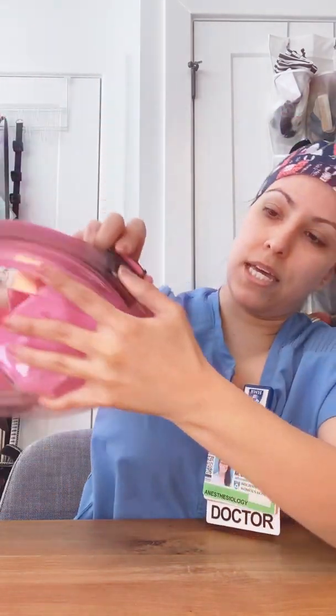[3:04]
And I wanted to show everybody a way that I've created personal protective equipment for myself in order to protect myself in the COVID units, and also if I'm called to provide anesthesia for any patients who are COVID positive.
So I've been looking a lot at the ideas circulating around, and I've adapted this in order to best suit my needs. Most of those needs are usually I am called to place central lines and arterial lines in patients who are COVID positive. And sometimes when they first arrive, I talk to them and I'm very close to them because they need physical exams and I need to gather some general medical history as well.
So I wanted to make sure I developed something that maintained my full free range of motion from side to side and up and down, especially because before I was wearing an N95 mask and a face shield on top. The problem with that is that the face shield sometimes can be very cumbersome. And especially when you're putting a central line, if you're looking down, sometimes it can bonk up off your chest and can potentially lead to issues because it starts to ride up on your forehead and is a potential vulnerability in your protection. So I wanted something that would be both an N95 mask and a face shield all in one.
Now I've seen a lot of other protective equipment that have been developed during this time of shortage, one of which was developed at the University of Florida, go Gators, by Dr. Bruce Spees and colleagues, which involves using the surgical coverings that we normally use to keep our sterile surgical equipment clean as a good filter that may surpass an N95. The problem with that is that, unfortunately, that means my protection comes down to my sewing skills, which would condemn me to death if that was the case. So I wanted to present something that you could construct at home for under $50.
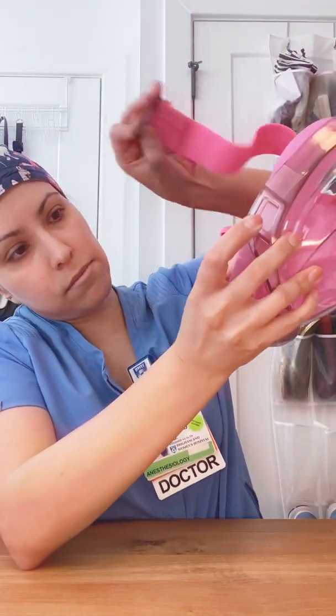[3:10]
It involves 1, 2, 3, 4, 5 key ingredients. 5 items that you need to create this protective equipment. So the first thing you need is a full face snorkel mask. I chose one that had an easy button here so that you can take it off like that. So it has an easy release on each side. There you go.
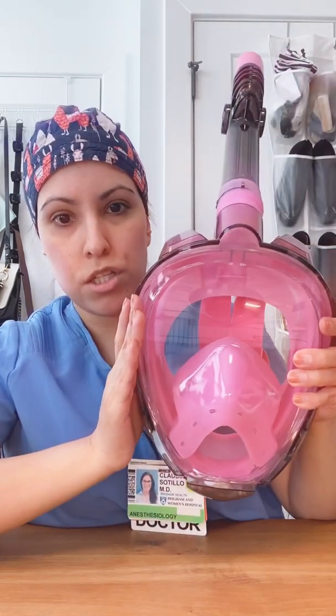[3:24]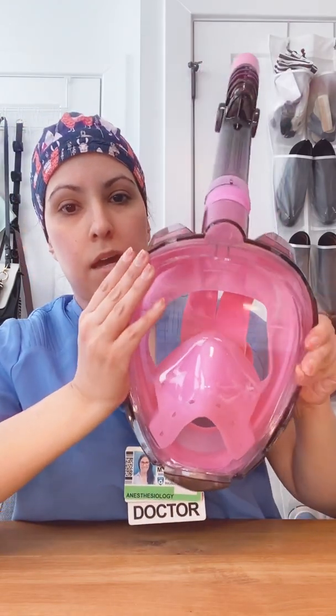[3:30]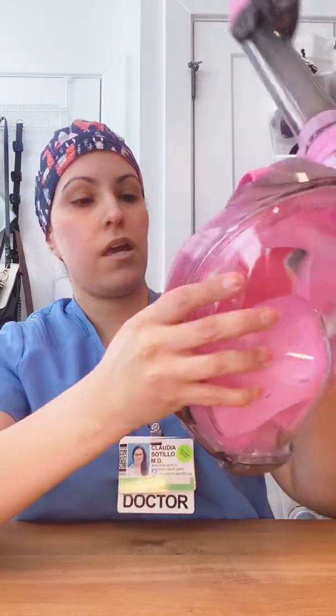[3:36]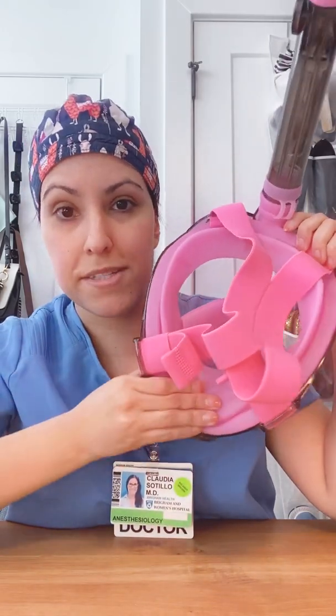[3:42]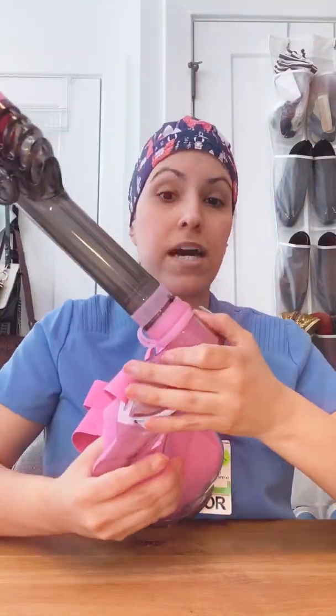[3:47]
And I chose this one also because it's not open to the environment at the bottom, and allows inhalation and exhalation to occur from one common point, which is this snorkel, and also does not allow your line of vision to fog up. The other nice thing about this snorkel mask is it has this silicone covering to create a wonderful seal around the face, and it has this nice stretchy elastic on the back. And finally, this snorkel is removable. So that's another reason why I chose this.
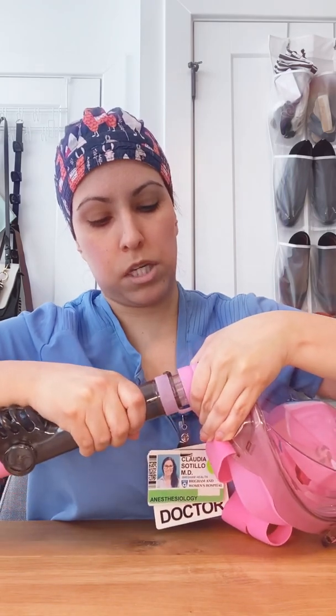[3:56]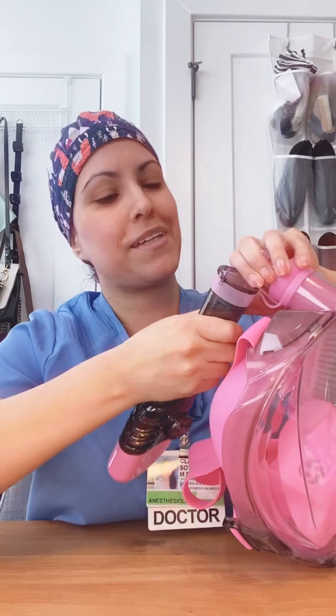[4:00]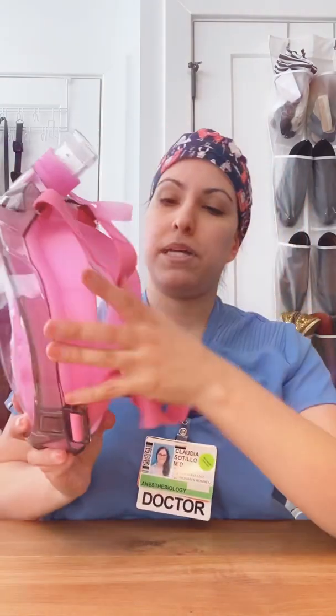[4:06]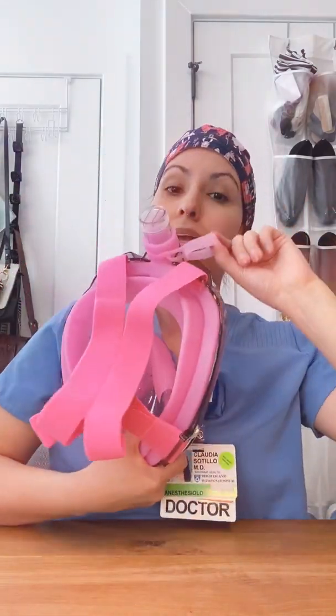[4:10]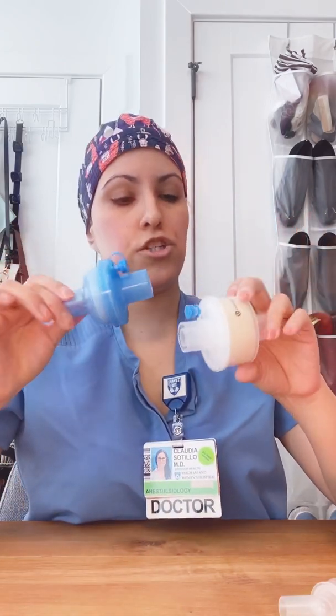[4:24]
So as you can see, I'm gonna remove the snorkel now, and cast it aside. So you should be left with the snorkel mask without the snorkel and kind of this security device here. Next, what you'll need is an elbow connector and 2 filters. I chose these 2 filters.
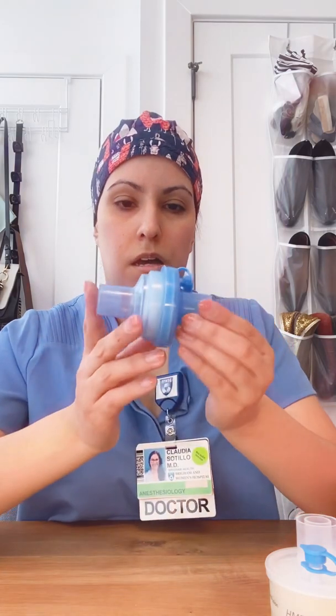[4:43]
This is the heat moisture exchange filter that is common in the anesthesia department. It's made by Care Fusion and it's the 1000/S. And then I put it in series with this, another heat moisture exchange filter. And this is also a HEPA filter with a viral filtration efficiency of 99.9%. So I place these in series as such, and then attach them to my elbow connector. So this should be the final arrangement, all in series, which is the same arrangement that you would have in the operating room if you were to be providing anesthesia to a COVID positive patient. You would have these two in series.
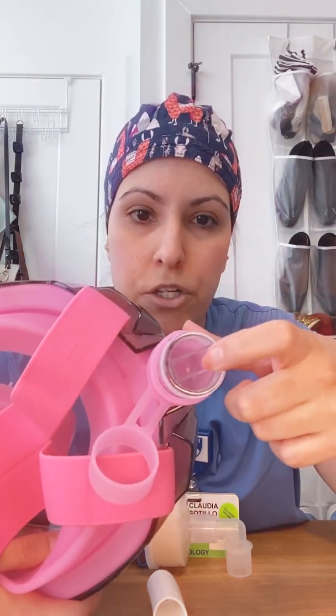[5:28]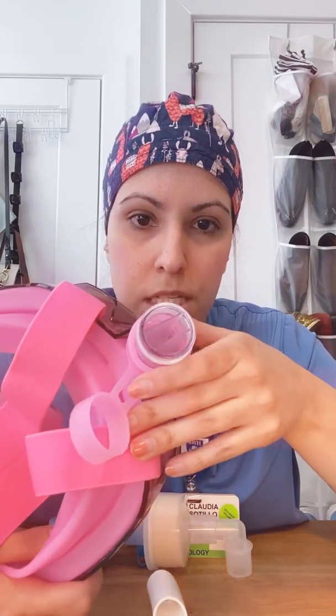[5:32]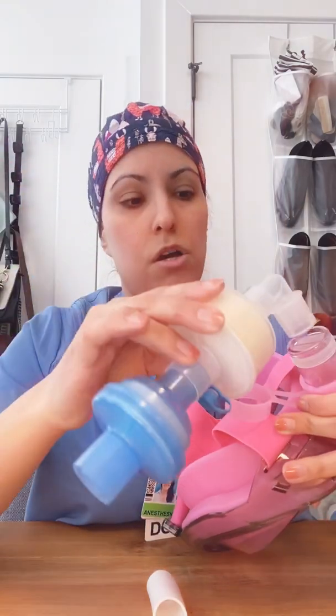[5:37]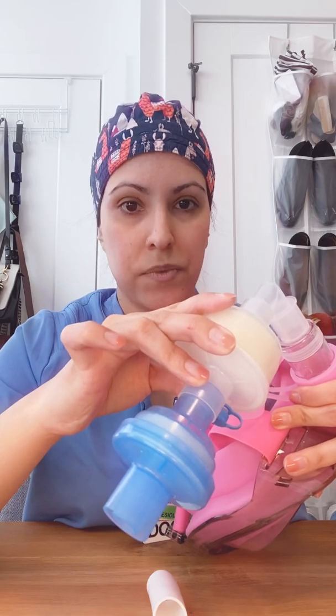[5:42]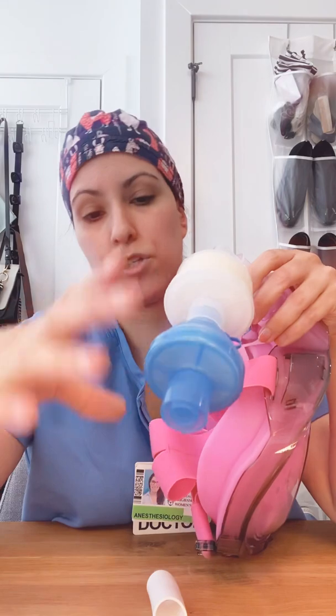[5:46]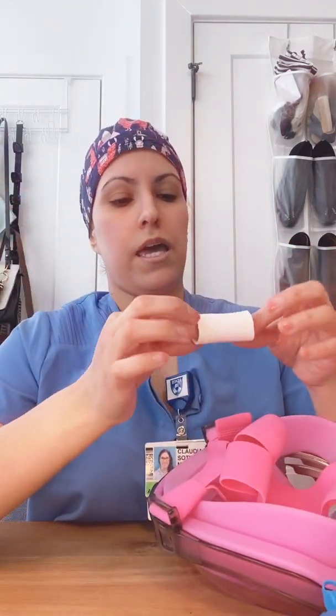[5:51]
And finally, I wanted to create an adapter in order to place it. See how there's basically your inhalation and your exhalation kind of divisions here on this snorkel mask. And I wanted to place my filters right in the middle of those so that I could inhale and exhale, but also do it from this common channel and through these filters. So I created this adapter, and this is an adapter that's made out of high temperature silicone tubing.
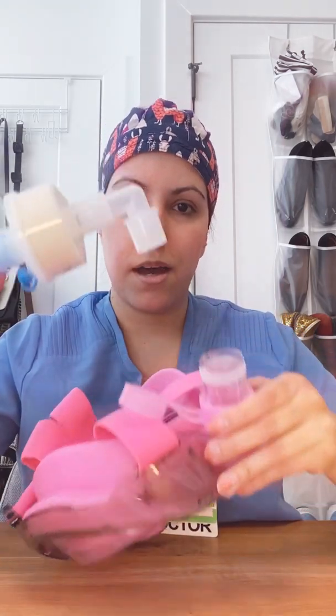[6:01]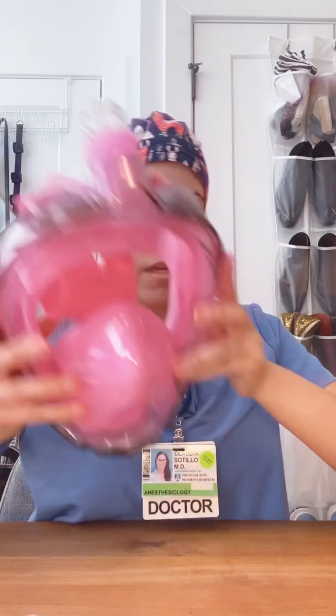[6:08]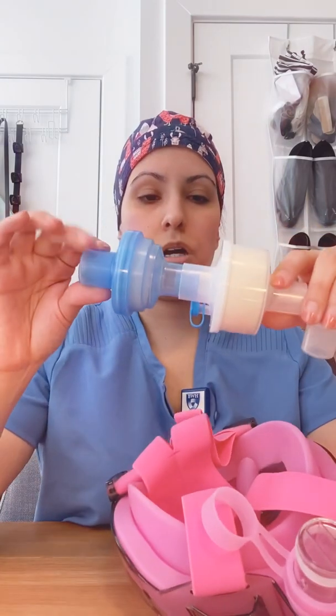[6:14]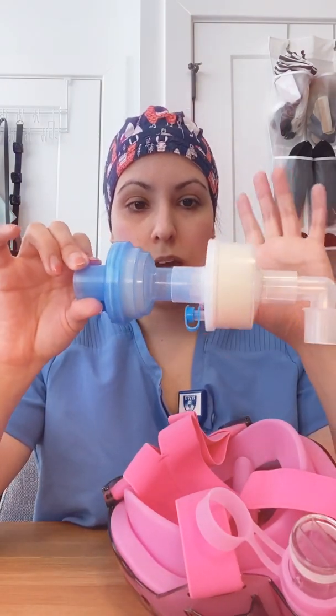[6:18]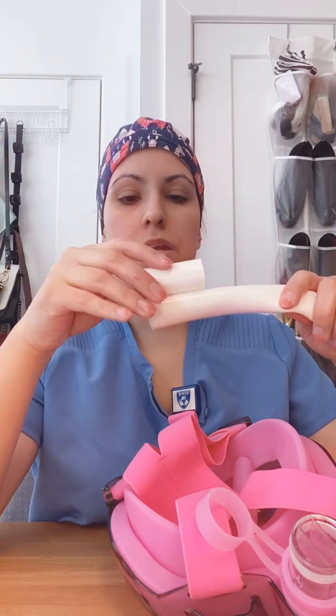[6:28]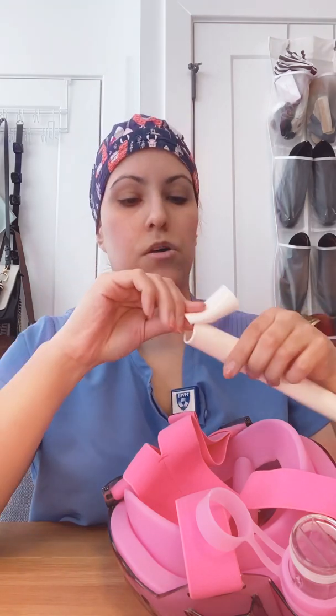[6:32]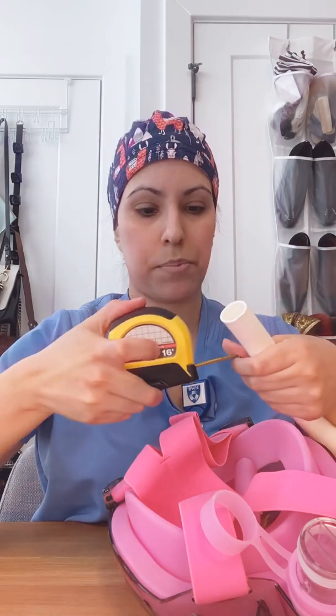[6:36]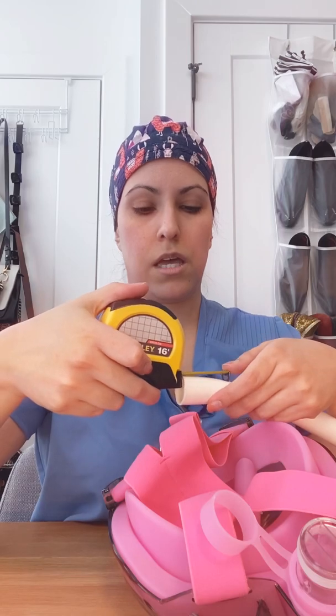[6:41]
And I'll show you how you can use this to secure your filters in place. So again, you're gonna need the snorkel mask with the snorkel removed. You're gonna need your heat moisture exchange filter 1000/S in series with your HEPA heat moisture exchange filter, the elbow connector, and then the silicone tubing that you're gonna cut to about 1.8 inches. So I just measured it with a simple measuring tape, and I cut it at 1.8 and made a mark and just cut it with regular scissors.
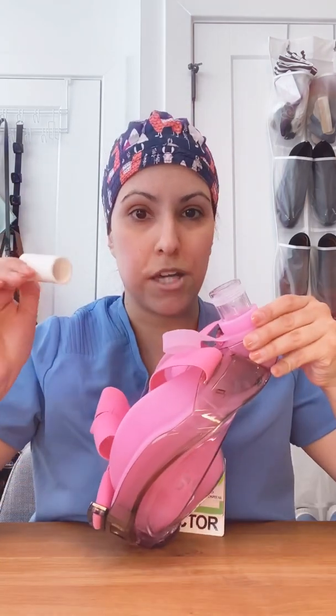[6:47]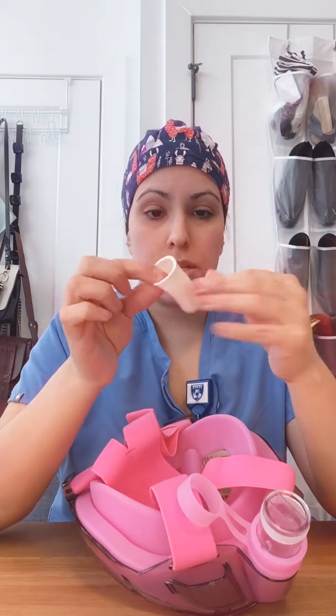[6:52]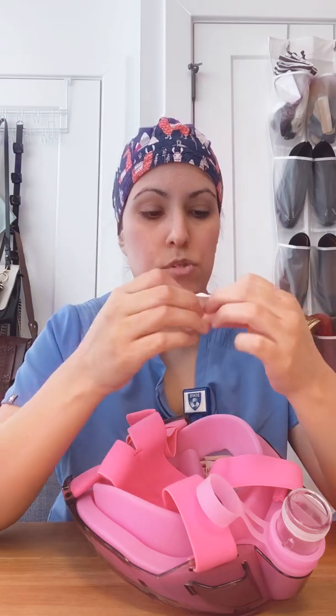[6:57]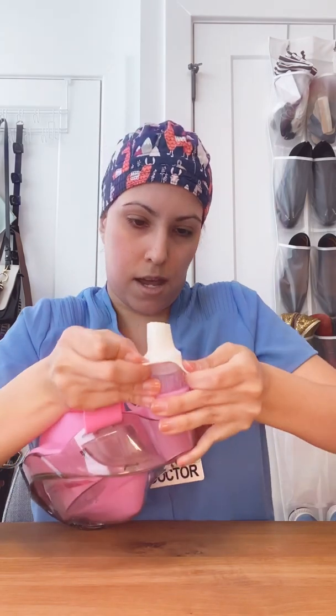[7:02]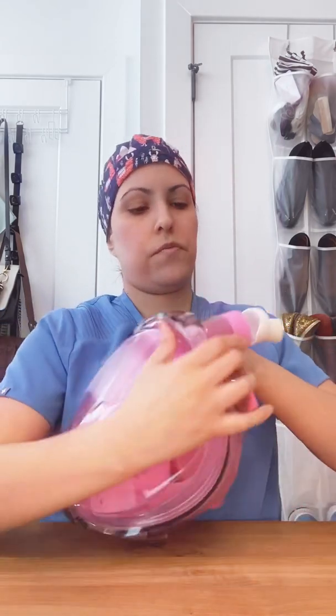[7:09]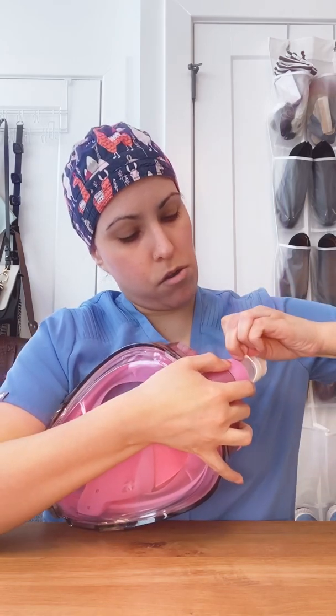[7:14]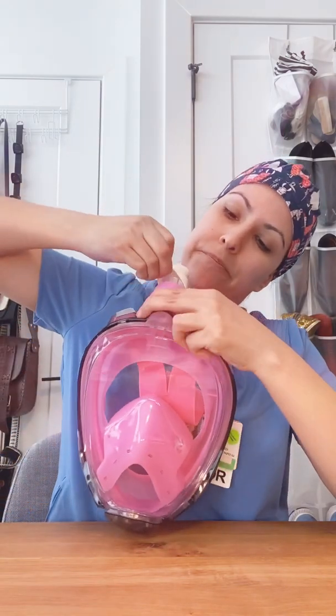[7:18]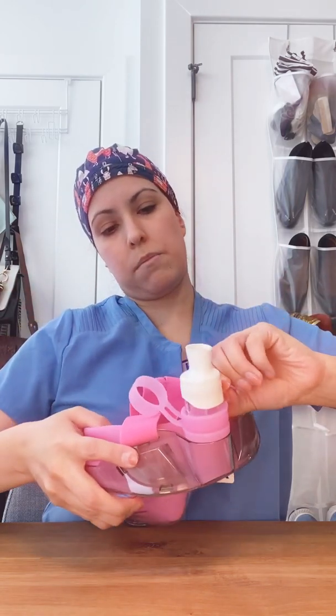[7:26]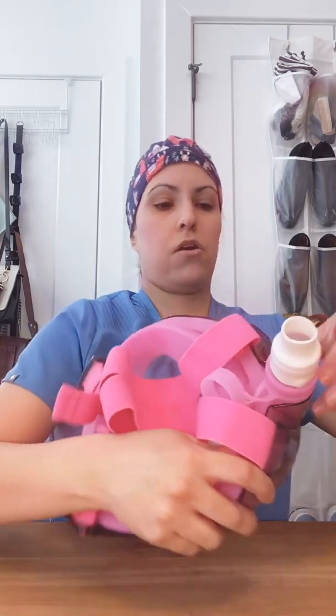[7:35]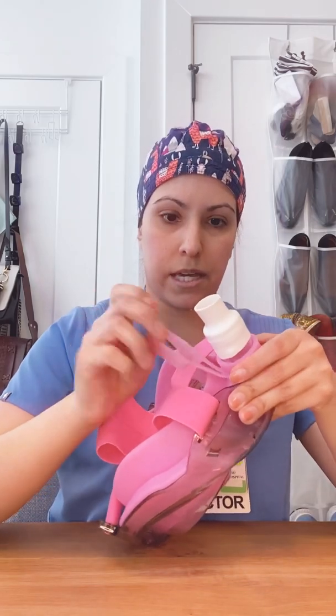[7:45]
And so now I'll show you how to attach everything. You're gonna take your small piece of high temperature silicone tubing, and you're gonna place it around the snorkel piece as such. So it takes a little bit of tugging, but you can get it all the way on. And what I like about this is it creates a very nice tight seal, so that way you're not letting air or any virus particles enter. So there you go. And then at this point, what I do is I take this extra piece that was previously used to secure the snorkel, and I place it around on top as a second safety.
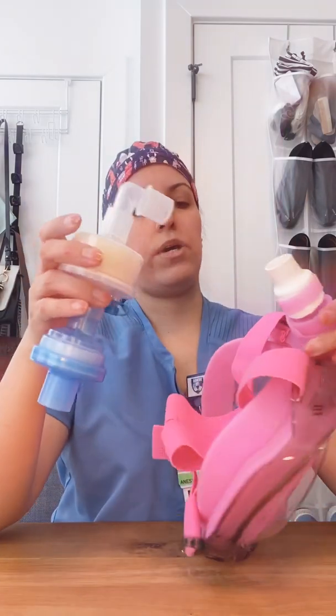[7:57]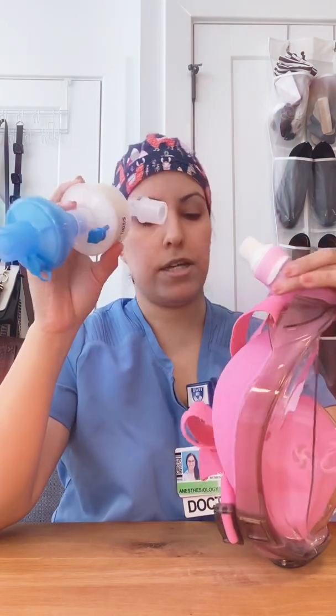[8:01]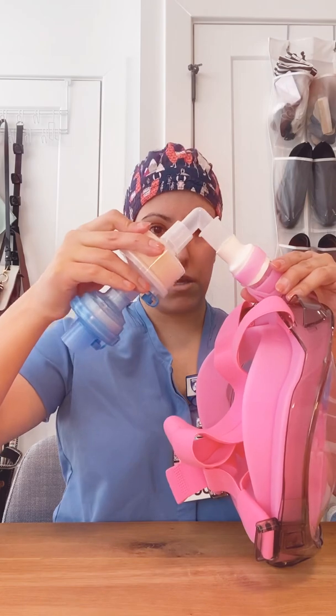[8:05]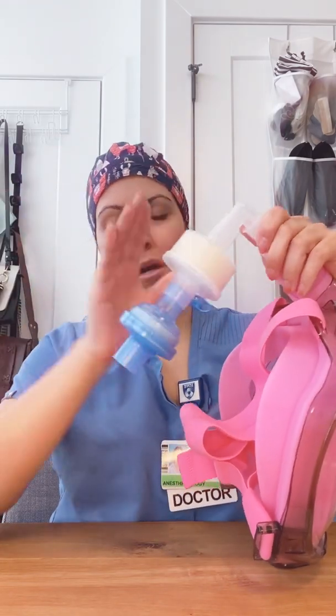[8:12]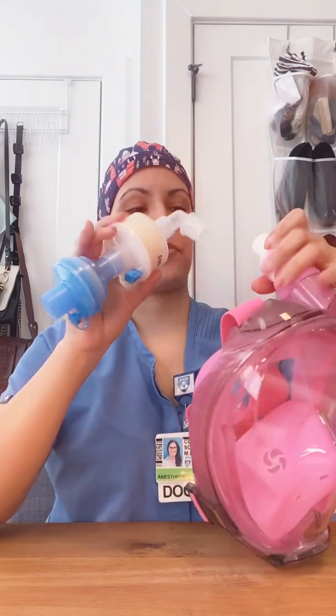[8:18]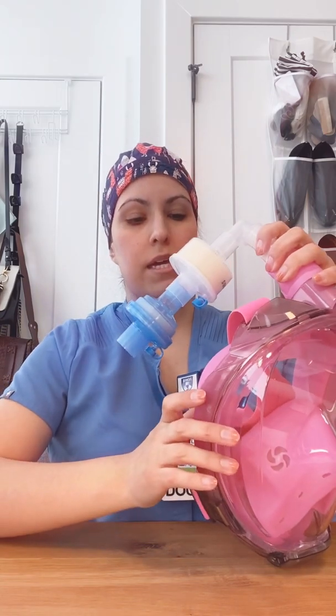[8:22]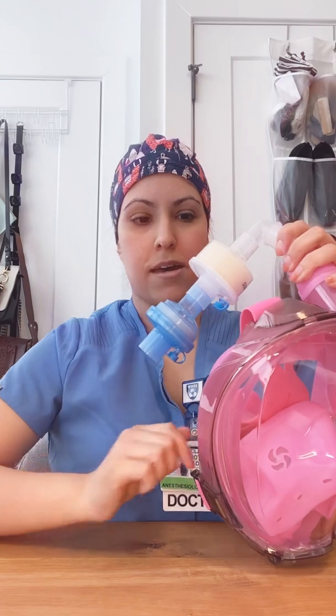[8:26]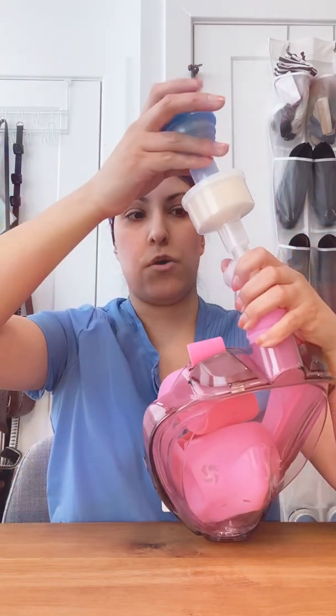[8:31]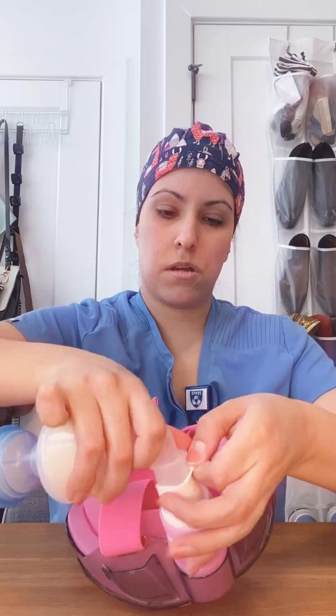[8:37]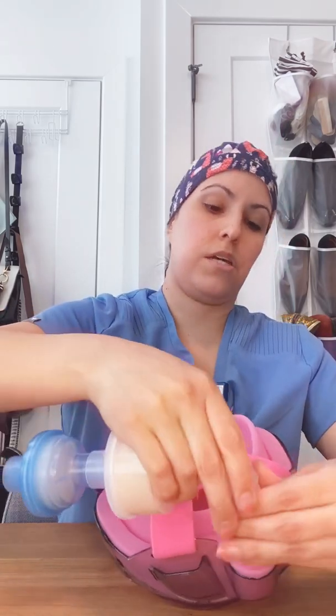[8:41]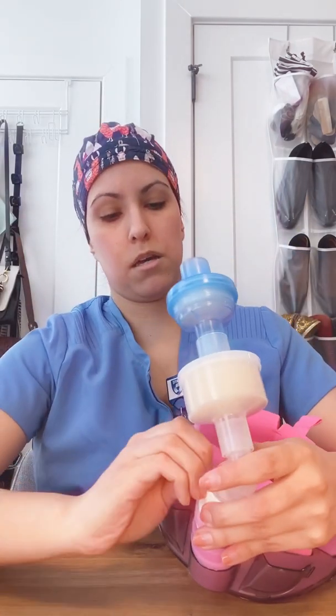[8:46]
And finally, what I do is I place my filters in series. Now I didn't want them to go immediately behind in this direction, because depending on how big the crown of your head is, it can be cumbersome and get in the way and potentially be knocked off when you're putting on your mask. So I arrange it to the side like this, so that it's off to the side, not in the way, and also not sticking up like this in a way that could also be knocked off. So we'll attach our filters now, attaching it to the other side of our high temperature silicone tubing.
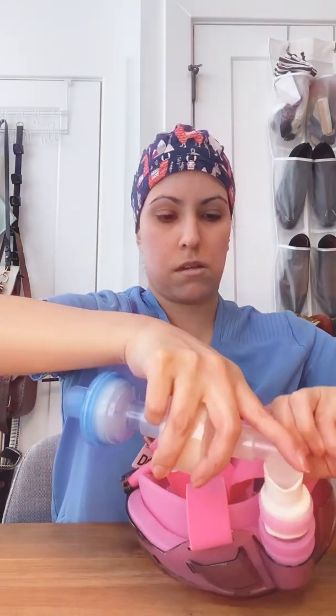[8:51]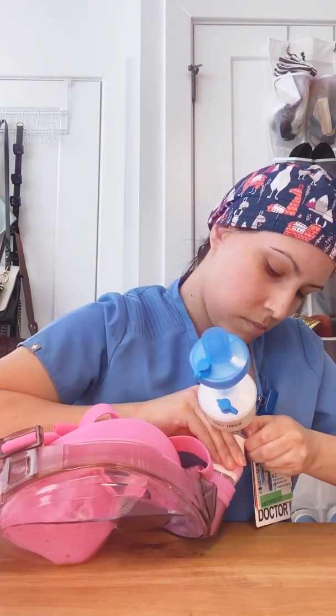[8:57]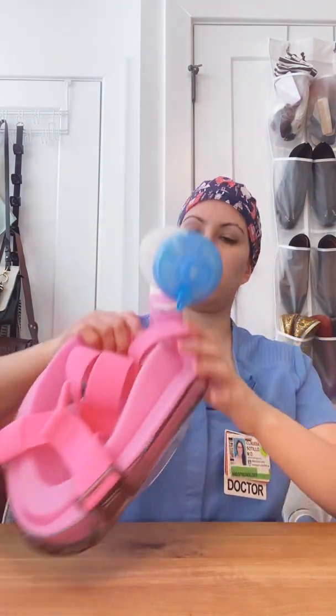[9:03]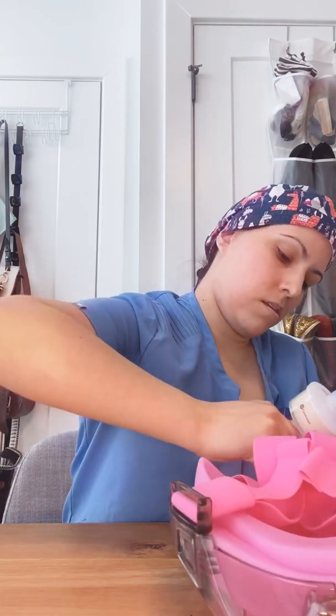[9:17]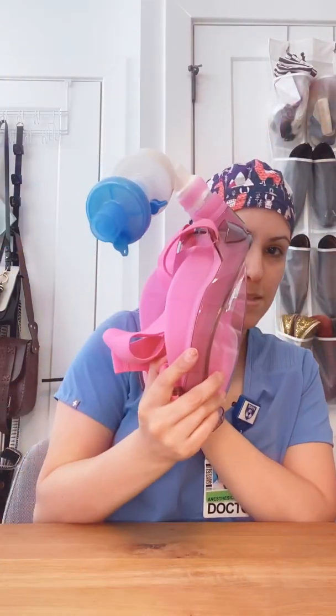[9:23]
Let's see here. I think we can get it a little bit tighter. Let me pull up our tubing a little bit more. All right, that looks wonderful. So it should look something like this. And the final step is to put it on.
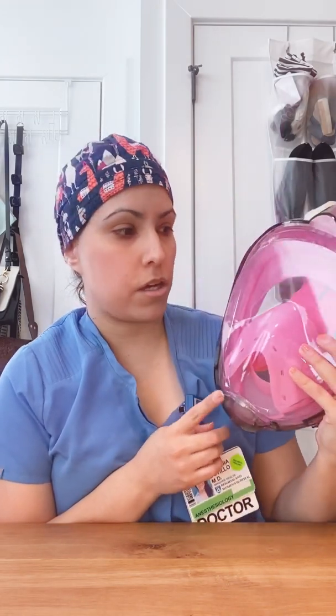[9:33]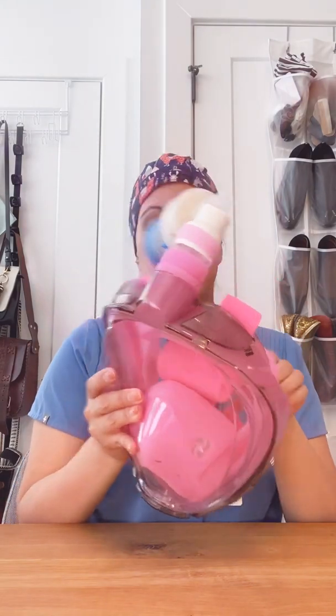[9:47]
Now, these snorkel masks are made by a company available on Amazon for about $42. The company is called Great Ever, and they come in all these fun colors. I chose pink. So you can choose whichever color expresses yourself. Then again, if you're using this for COVID positive patients, I would suggest maybe a cheerful color, because black or dark red could scare them. Many of these patients are very, very scared and lonely. And so I think coming in with a mask that's all black or dark red looks a little bit angel of death-like. So I chose a nice cheerful pink color. But again, everybody's open to however they want to express themselves.
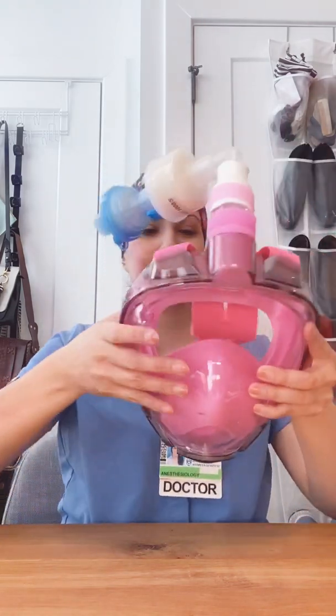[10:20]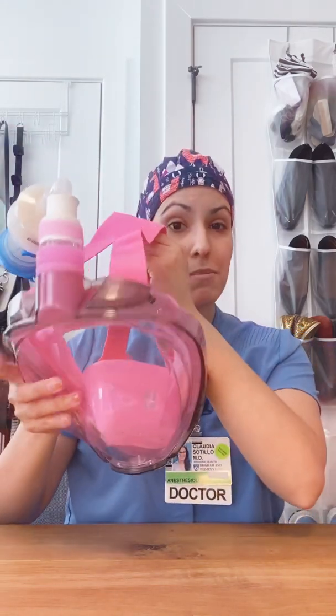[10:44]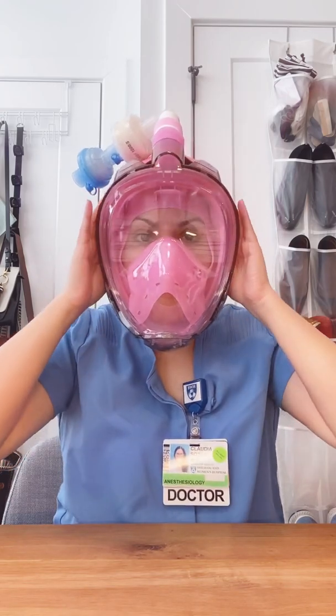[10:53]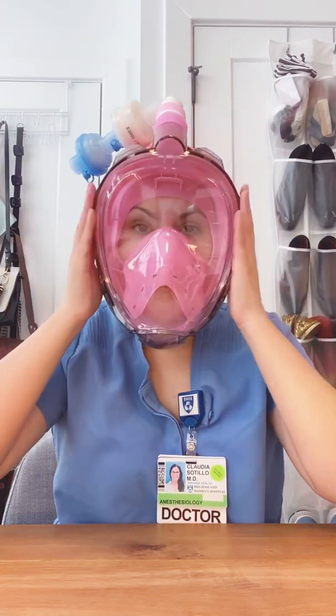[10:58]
This is your PPE. And finally, before you order this, you want to make sure to measure your face. You measure from the bridge of your nose to the bottom of your chin. If you're 4.7 inches or less, you're a size small, and if you're 4.7 inches or more, you are a large. So make sure you order the right size. So I'll place mine on. And there we go. This silicone creates a nice seal.
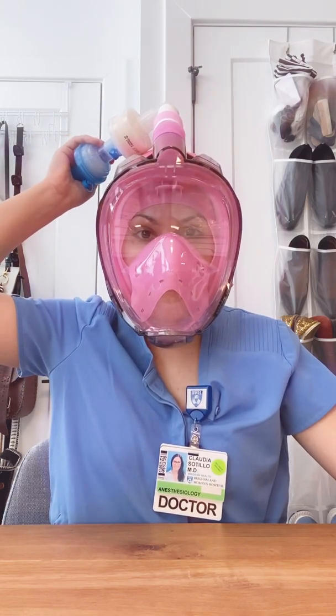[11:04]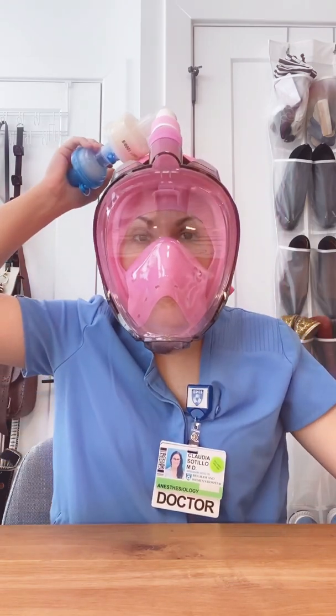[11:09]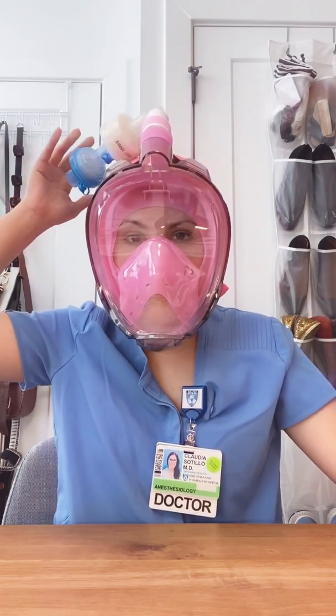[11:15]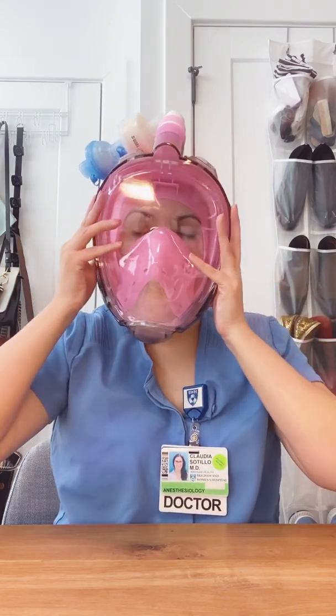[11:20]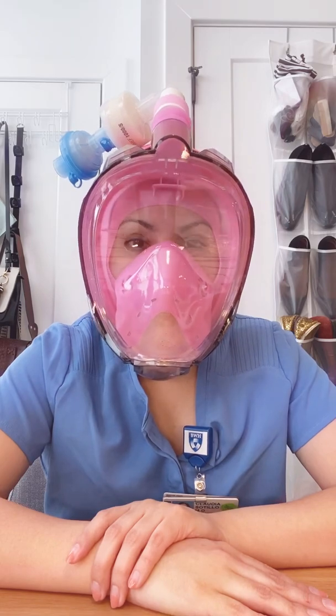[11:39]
And then I can obstruct the filter and test to see how good of a seal I have. See? I don't detect any leaks. I'm able to obstruct and make it tight or not and blow out. And I have that full range of motion that we were talking about before. So that is my 5-step PPE creation.
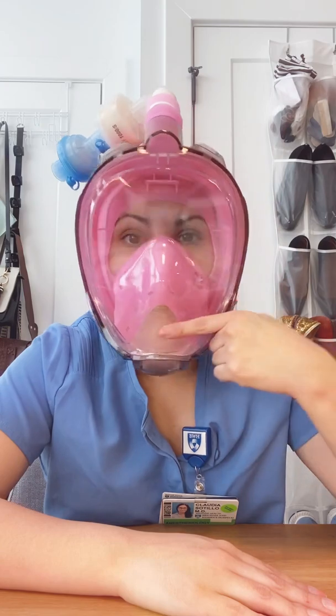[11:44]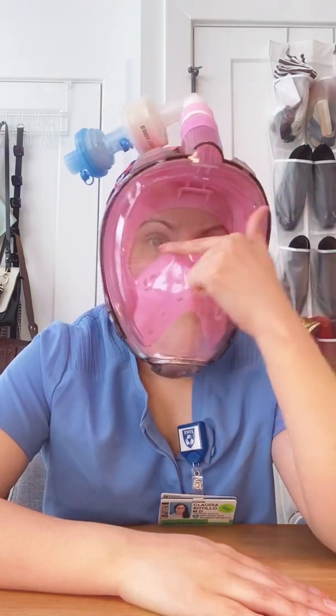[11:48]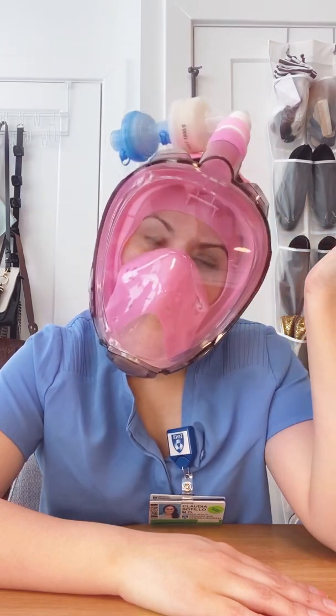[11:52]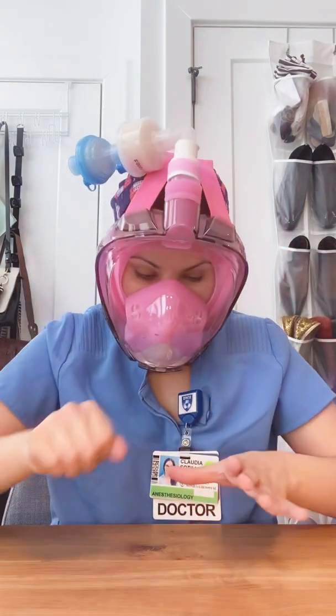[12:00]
What I like about this is you can still see your mouth. So the patients can still see a little bit of your mouth. You can still express yourself, and patients can see if you're laughing or they can see your eyes at the very least. And also it's a built-in face shield. So again, I can put in central lines. I don't know what that was. That was not how you place a central line, but I can do whatever I need to do.
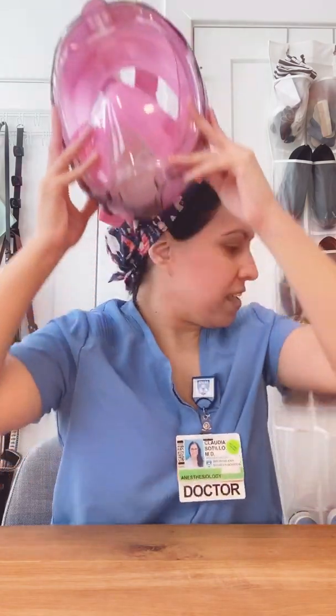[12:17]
And it's all in one. And if I need to take it off for any reason, I can press this button and take it off in a snap.